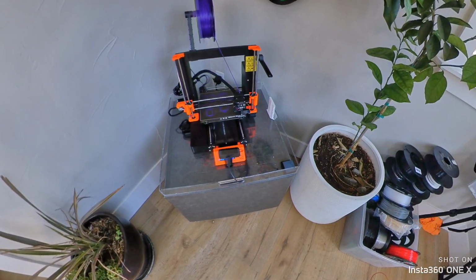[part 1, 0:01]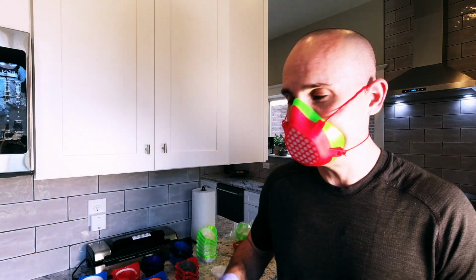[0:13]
Well, we're getting ready to pack up a bunch of these coronavirus masks, the COVID masks that we've been 3D printing over the last few days, and I wanted to answer some more questions that I've had from the community. A number of you have asked me a few things, and it's been amazing to see the outreach and the outpouring of help and support that's come from this. So many of you have been willing to pitch in and ready to just help and do whatever you can to get these made and get these out to the doctors and hospitals that need them the most.
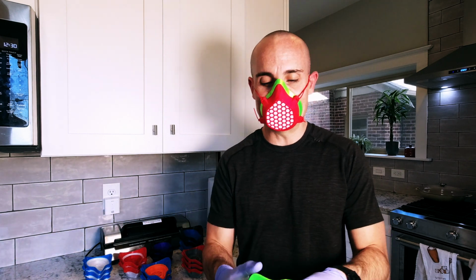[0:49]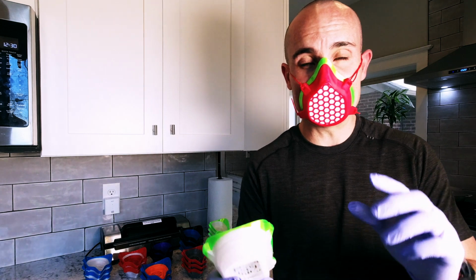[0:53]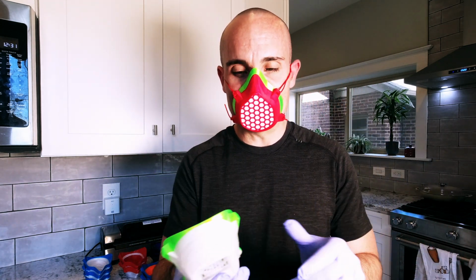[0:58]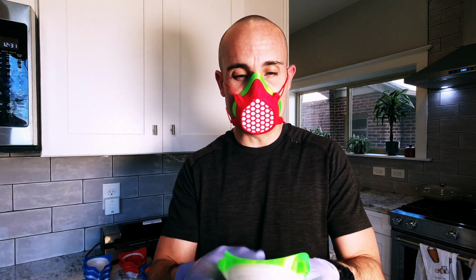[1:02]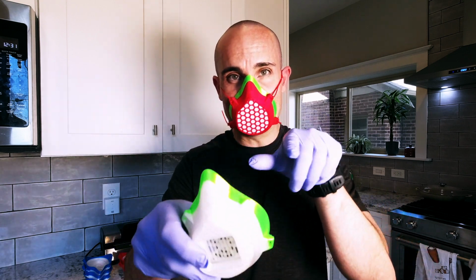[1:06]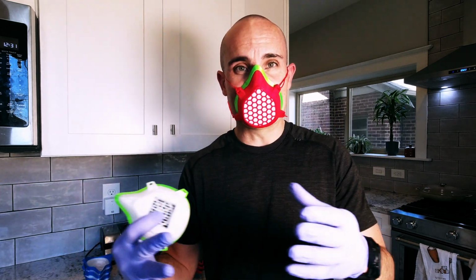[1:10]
Now, there's been a few common questions that have come up, and so I want to go over those. First, some more questions about the choice of materials have come up. One thing you want to note, you don't really want to use PLA for this. PLA has a lot of micro fissures. It's really brittle, and it's not really cut out for this job. PETG, on the other hand, is used to make water bottles, things like that. And so if you print it at a decent enough temperature and you have enough perimeters, I have 3 to 5 perimeters on all of my masks, you're not going to get as many of those micro fissures, and it's going to be a lot safer for the doctors.
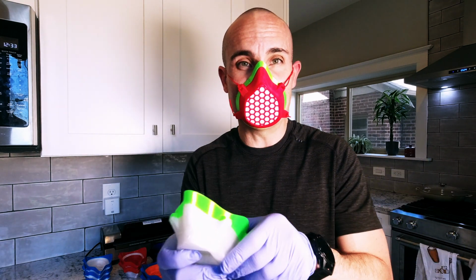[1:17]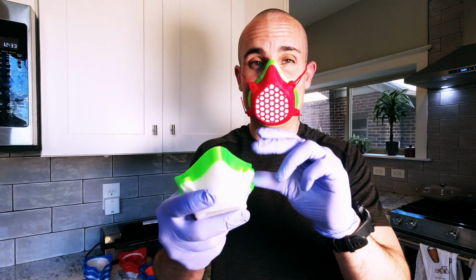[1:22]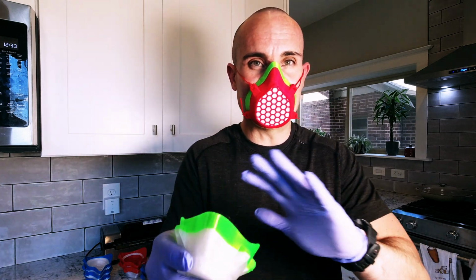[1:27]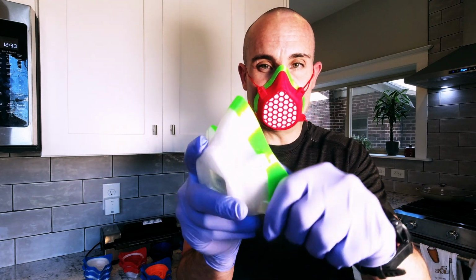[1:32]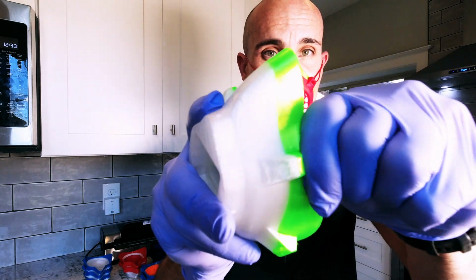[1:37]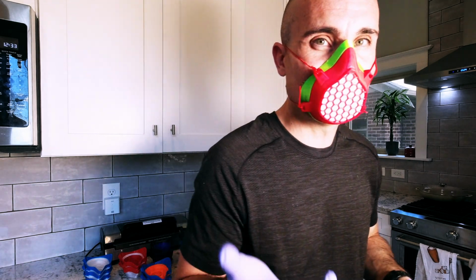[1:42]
Now, the other question that's come up a few times is how well PETG and TPU bond together. I should start by saying that PLA and TPU will not bond. You're not going to get adhesion, and so the layers are just going to come apart. That's not what you want. With PETG and TPU, however, because the temperatures are higher and the type of material they are, you can see this is one solid piece. This is not going to come unbonded. And the nice thing about this, and you can see this on my mask already, is that by having that PETG and TPU on here, the TPU really is what seals against your face.
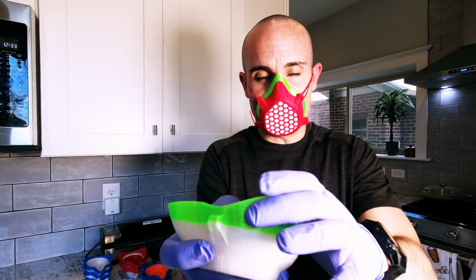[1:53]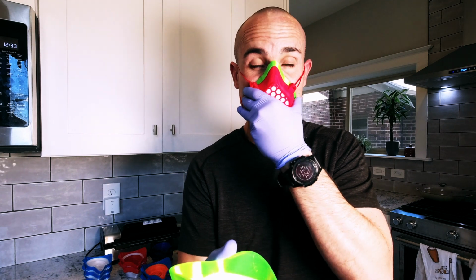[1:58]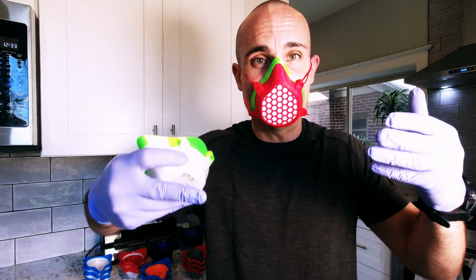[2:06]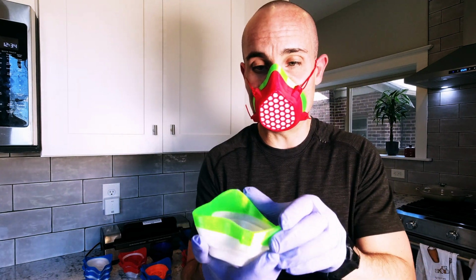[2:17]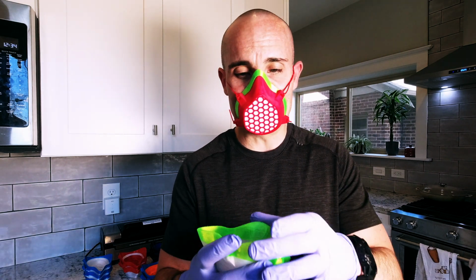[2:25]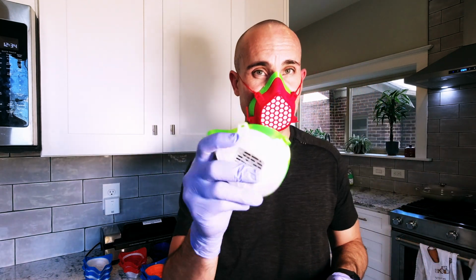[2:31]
If you aren't able to print with TPU, it's okay, but having that TPU layer on here just makes this more flexible. It makes it sit against your skin much better and gives you a better seal. Really what we want from these is that all of the air coming in and going out goes through the mask filter and not through the sides of the mask, because that's how you end up getting the virus and everything else through there. So really that seal across the face is the most important thing. The other thing is the comfort of this sitting against your skin for a long shift. Some of these doctors are working 8 to 12 hours a day, and so having something that's comfortable makes a big difference. So that's why we go with PETG and TPU.
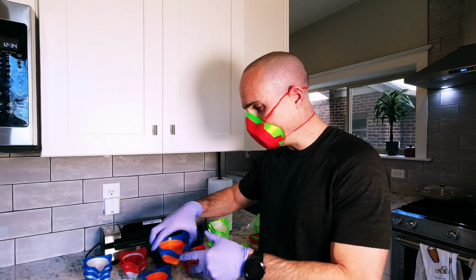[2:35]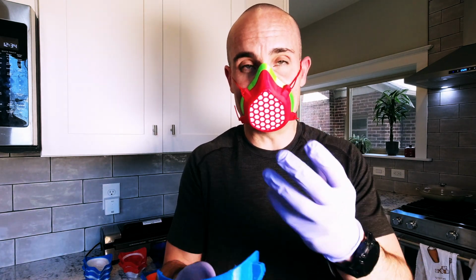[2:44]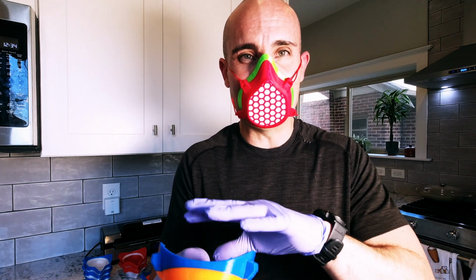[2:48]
Now, some people of course have asked, with the PETG and TPU, does the TPU actually create more micro fissures? And honestly, the answer is I don't know. But what we've done from testing is we found, since that seal is better against your face, it seems like this is still a better alternative to just having PETG alone.
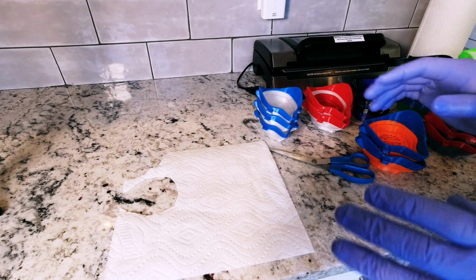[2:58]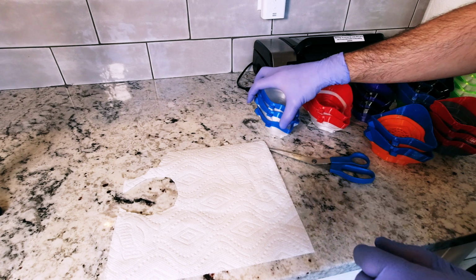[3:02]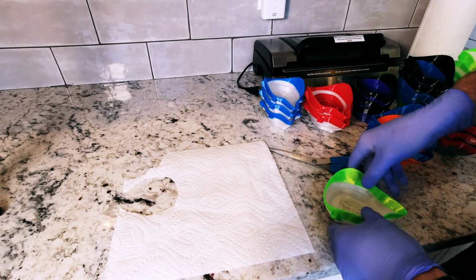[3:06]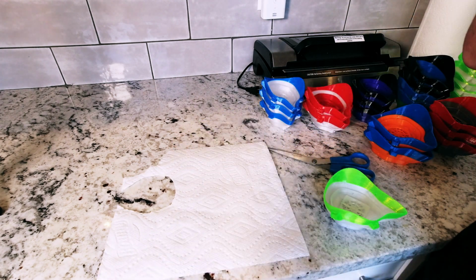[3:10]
All right, next big question is, how do you actually assemble these? What do you use for filters? Things like that. So let's dive into that. Obviously, this is for illustration purposes only, but I want to show you how you would assemble one of these. What you would typically do at a hospital is you would have an N95 mask. We'll pretend that this paper towel is an N95 mask.
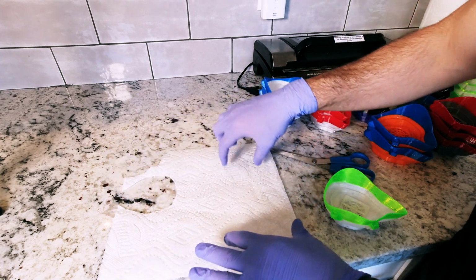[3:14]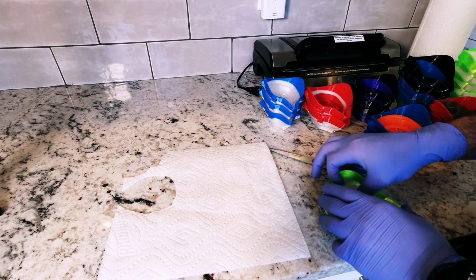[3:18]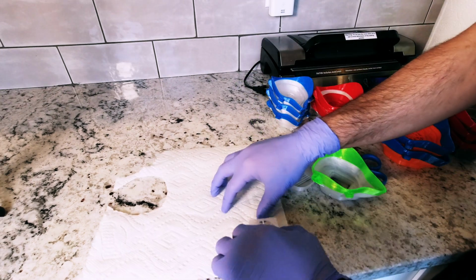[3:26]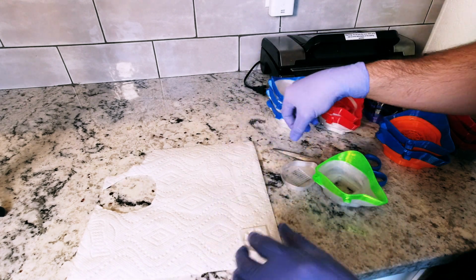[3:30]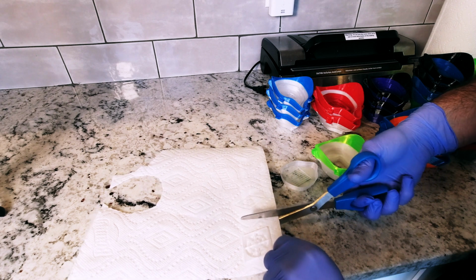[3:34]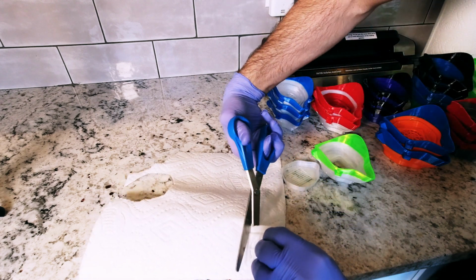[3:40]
And you would end up cutting 6 to 8 squares out of that N95 mask. The really cool thing about that is one N95 mask, instead of being single use, can be used for 6 to 8 of these reusable face masks. So what you would do is you'd take this square filter. The reason I like this design is because it uses these small square filters. And so what you'd end up doing is just cutting a square out. It doesn't need to be this big, obviously.
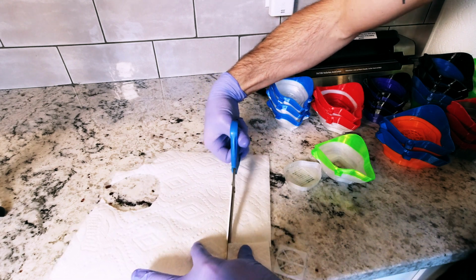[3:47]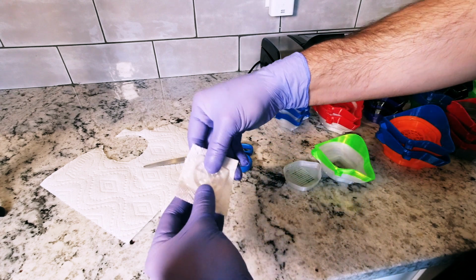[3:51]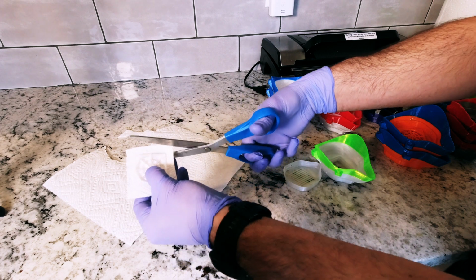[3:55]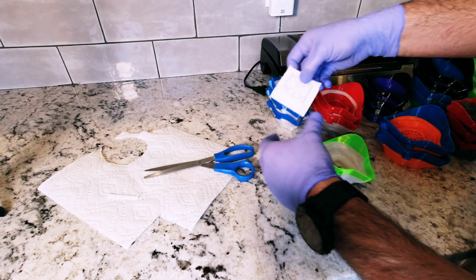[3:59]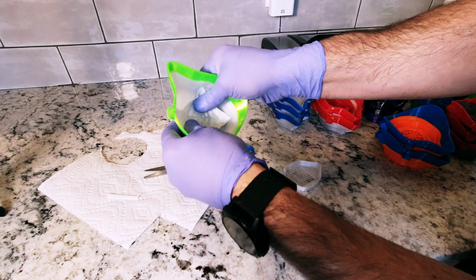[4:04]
And of course, I'm doing a terrible job right now. You'll get the idea. So you'll have that, it wraps around the edges, and obviously you don't need it that big. It just needs to overhang a little bit. And then what you do is from the inside, you pop this in.
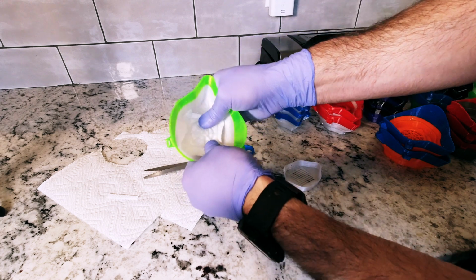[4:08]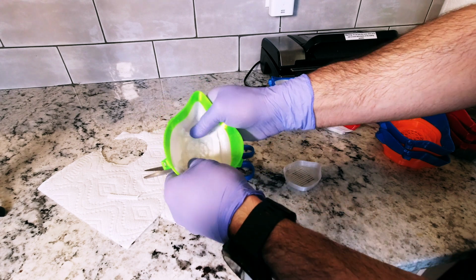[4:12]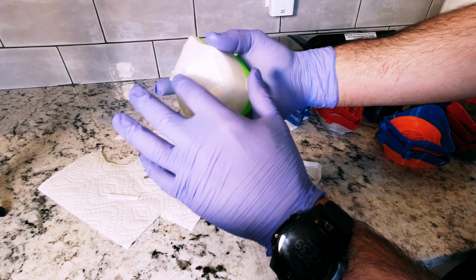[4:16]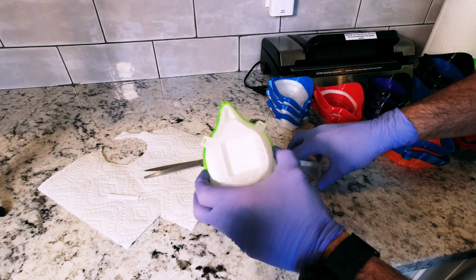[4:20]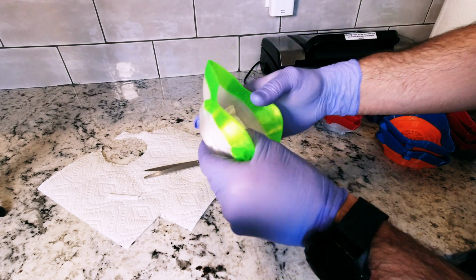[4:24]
And it's really tight, which is obviously what you want. And now when you look at it from this side, you see you have this nice tight seal of the mask and the filter, and then you place this over it just as an extra little bit of protection, and then this obviously goes on the face like that.
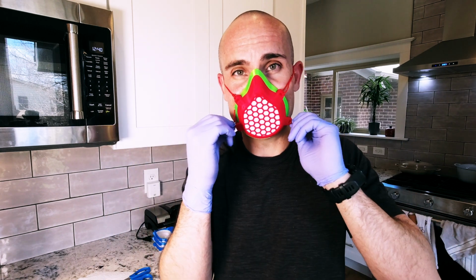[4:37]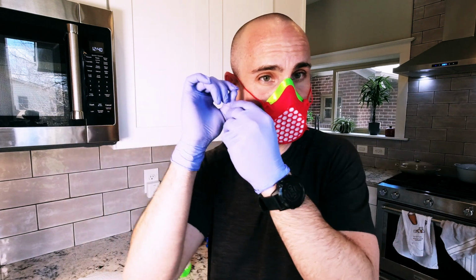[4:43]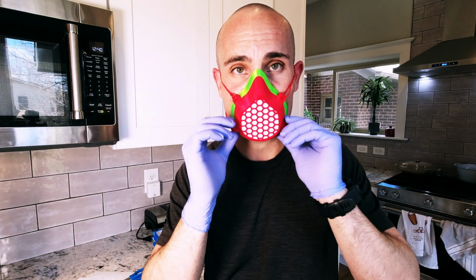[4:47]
Now, another common question I get is, what do you use for the straps? In this case, obviously elastic bands or something, rubber bands would be kind of ideal. I was going through the house trying to find things that would work, and what works really well is actually TPU. So you just cut a length of TPU, and of course it's really flexible and nice, so you just tie it and tighten it up. And you can get it nice and tight and get a good seal.
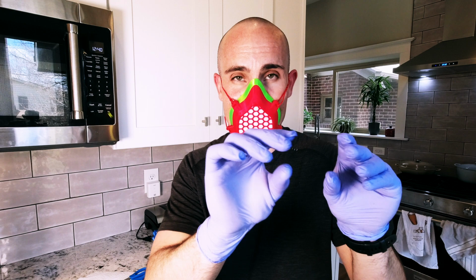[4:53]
Elastic, again, would probably be the best bet. And not elastic that has material over it, like felt or anything. You want that bare rubber, because if it has felt or something, that's not going to be able to be sterilized by the doctors. And so you really want to get something that can be sterilized. In this case, TPU seems like a decent last ditch alternative to some of the other things I've seen. But again, rubber bands seem like they would work.
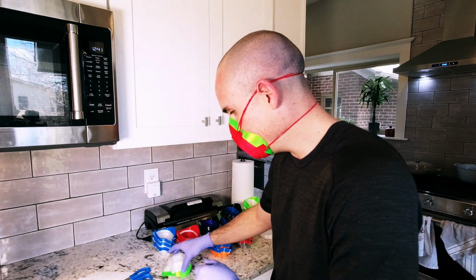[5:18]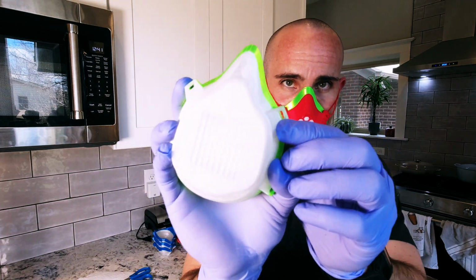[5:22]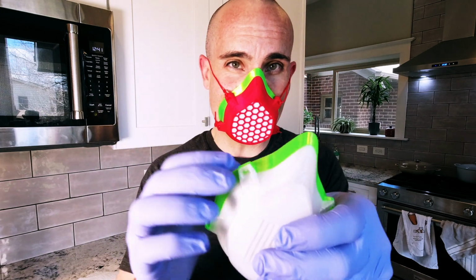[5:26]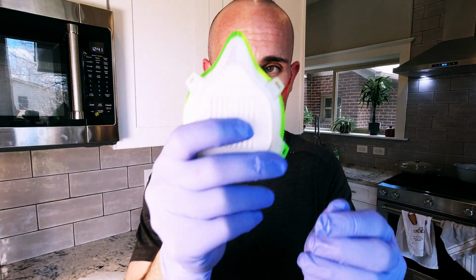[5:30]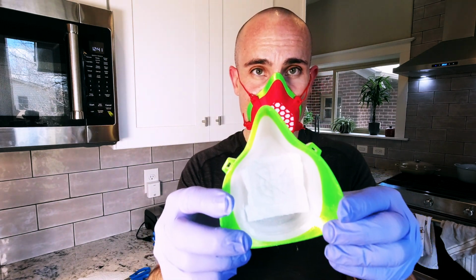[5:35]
And the nice thing about these masks is they have, it's probably a quarter inch or so hole opening on the sides, versus the Montana masks have a smaller round opening, which I don't think works as well. So these you can fit a little bit wider and larger bands in.
Now, as far as print times go, you're going to take about 8 hours to print three of these masks or two of the larger 100% scale masks. In the description, I've got links to my 3MF files. You should be able to import those into most slicing software programs and use that to generate G code. This is used on a Prusa Mark IIIs, and so if you have a Prusa Mark IIIs, it's kind of drag and drop, should be all set straight from the factory.
I'm using Zyltech PETG and Zyltech TPU because it's the only thing I could find. It looks like most of their stuff is sold out now, so if you have any good supplies of PETG that you can find online, definitely hit it down in the comments. I've heard that Prusa has discounted their orange PETG, and so that's a big help, especially if you're making the face shields rather than the masks.
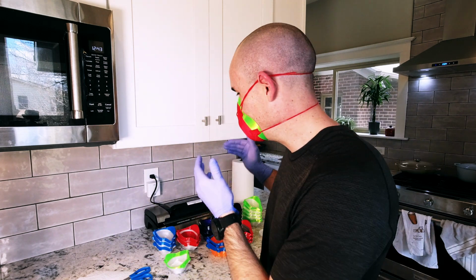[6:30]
Now, what I like to do is take the print straight from the printer, wearing my gloves and my mask, and get them vacuum sealed. If you don't have a vacuum sealer, because obviously not everybody does, then just get them straight into a plastic Ziploc bag or something like that, where they won't get contaminated by outside air, and get them into a box or something like that. And then coordinate with a local hospital or Masks for Docs, somebody like that, to try and get a pickup going or get these delivered.
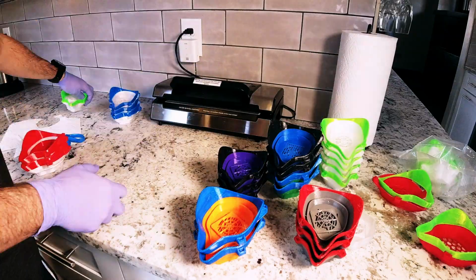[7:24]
But make sure whatever you're doing, if you're printing masks or shields, that you check with the hospitals and doctors first to see what they need. The last thing you want to do is start printing stuff that can't be used by people. Obviously, you can use it for home use, and that's great because in the United States, we're suggesting that people, when they go outside, wear a mask. So this is a great way to do that and not take an N95 mask from somebody who needs it more than us on the front lines, a hospital worker, a nurse, doctor. So let's get these vacuum sealed, packed, and ready to go.
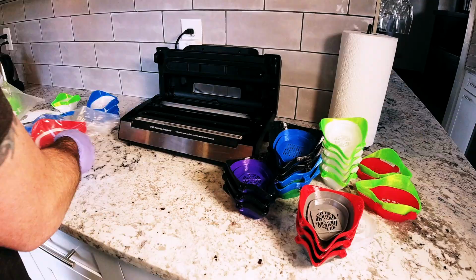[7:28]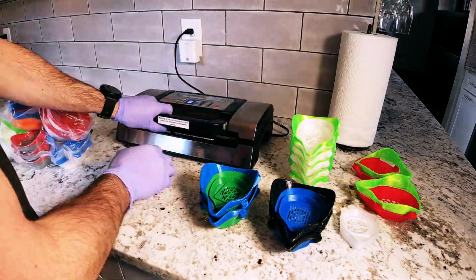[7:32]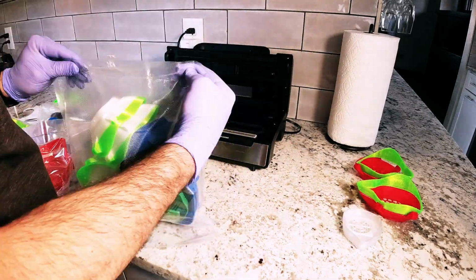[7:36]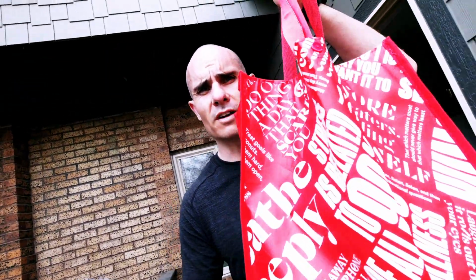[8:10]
I can tell you too, just having this mask on for the past 15 or 20 minutes or so, it's hot. And this is one that has a lot of breathing area, a lot of surface area. So it really gives you a glimpse, an insight into what our doctors and nurses on the front lines are going through and how hard their days really are. Wearing these all day must be pretty awful. And so, the best thing we can do is try and make them as comfortable as possible, thus the TPU around the outside. All right, let's get these things delivered. Got 25 masks.
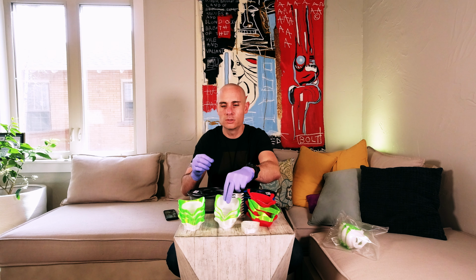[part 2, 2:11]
Today I wanted to talk a little bit about some questions I've been getting on Twitter related to how I'm printing these coronavirus masks for doctors and hospitals. Now first, I apologize if you can hear my 3D printer printing in the background. Normally I would shut that off during a video, but in this case, I don't want to take any time to shut it off when it could be printing masks that'll help somebody out in the hospitals.
So let's jump right into it. First, let's start with materials and what I've been using. Originally, when I started printing these, I was printing the masks in 100% PETG. PETG is a material that is used a lot in, like, water bottles, for example. I was printing them out of PETG, but the problem is that PETG, while it's flexible and durable and all of the things you would hope it to be, it's still really rough on the skin.
If you have a PETG mask sitting on your skin for 8 hours or 12 hours a day, you're going to run into problems. It's going to be chafing and cutting and scratching you. The feedback I got from that was that it wasn't very comfortable to use for long periods of time during a shift. So obviously we want to help prevent that. We want to make this as comfortable and useful for our doctors as we can.
So I went to the next iteration, and what I did was I printed the first 70-80% of the mask out of PETG, and then I transitioned it to TPU. TPU, if you're not familiar with it, is a really flexible material. It's almost like rubber, so you can use it to make a gasket, and you can see how flexible it is here. What that does is it creates this nice, comfortable layer that sits across your skin.
The other cool thing about it is, since it's flexible, you're not going to get that chafing and scratching that you would have from having this on your skin for a full day. The first thing I wanted to do is have these anchors out of mostly PETG. That's why I have the layer height where it switches to TPU so high, because I wanted these to be as strong as possible. The downside is that this bottom part that goes across your chin or around your chin
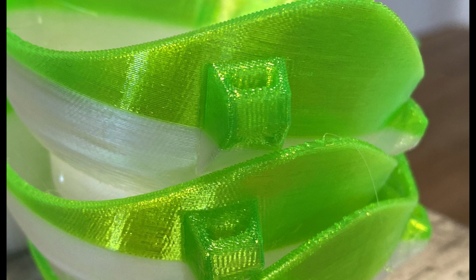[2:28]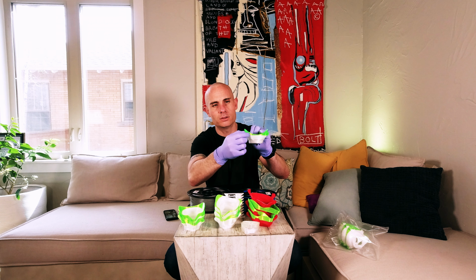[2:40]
is still PETG. So what we did is we did a test and we printed a mask 100% out of TPU just to test the strength of those mounting points where the straps go. We actually found that that was really comfortable and that those mounting points in the TPU are still really strong. So for the next iteration, you can tell I dropped the TPU layer down quite a bit. Now you get a nice TPU layer all the way around the mask, and it's thicker around where the cheeks and the nose go. Because of that, the entire bottom mount is now out of TPU, but it's still super strong, and I don't think that's actually going to cause any long-term durability issues.
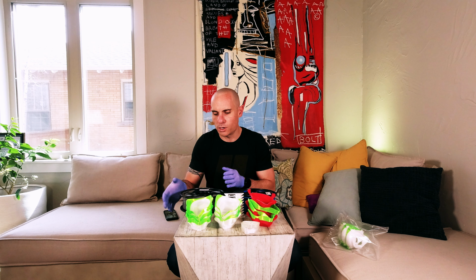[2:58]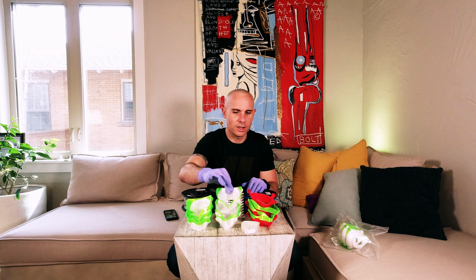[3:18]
So let's talk about the filament that I actually ended up going with that achieved this result. The first thing is I used PETG, which is what they use to make water bottles and a number of other things. That's what I use for the base layers in all of these. You could also probably use PLA and then use PETG along with that, but I ended up using PETG just because it's flexible and really durable. It also has a higher melting point, which could be good in the case where they're going to have to take these and sterilize them in between uses.
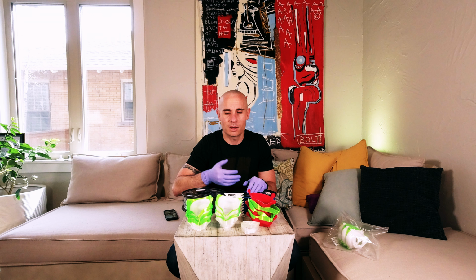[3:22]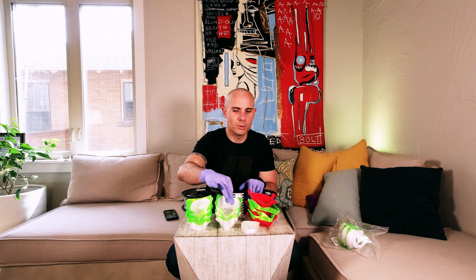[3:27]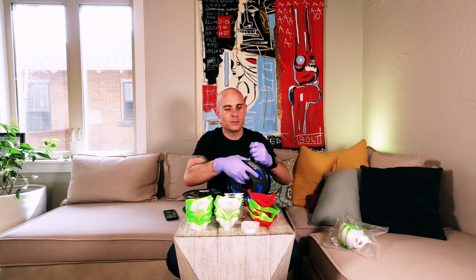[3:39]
They're probably going to be using chemicals and other things that might damage PLA, but we know from being in the field that PETG holds up to that. So PETG is what you're going to want to use for the base layers, and then TPU is the material you're going to want to use for the rest. And TPU, again, is really flexible. You can see how much this stretches. It's almost like a rubber band.
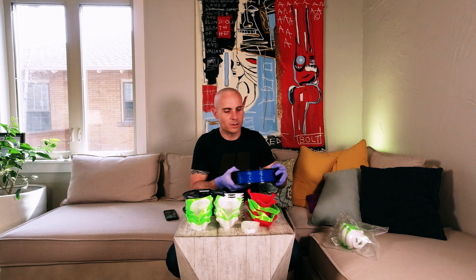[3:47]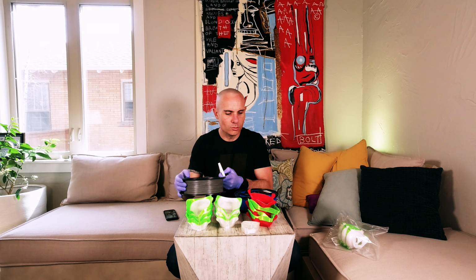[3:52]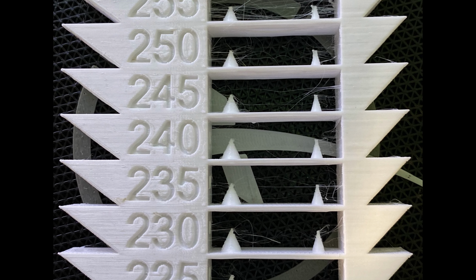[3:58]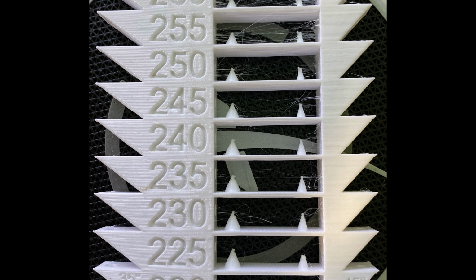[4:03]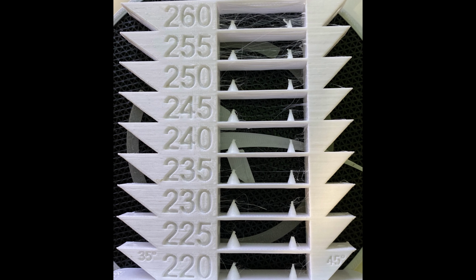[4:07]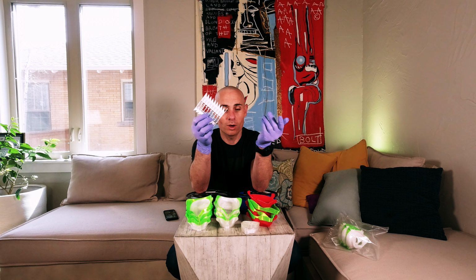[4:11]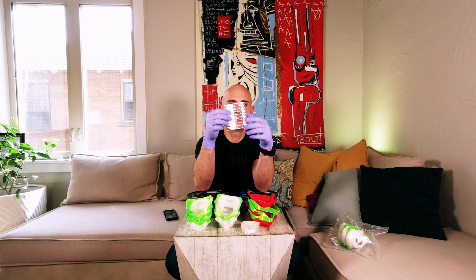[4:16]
And so some printers have a difficult time working with this, but I'll tell you what I did. Anytime you get a new roll of any type of filament from a new company, you want to print a temperature tower. You can see as the temperature goes up, the stringing in between the layers gets really bad. And if you look at it, you can see how the overhangs perform at different temperatures. You can see how the bridging performs at different temperatures. And what I found actually prints best and has the least stringing is about 220 to 225.
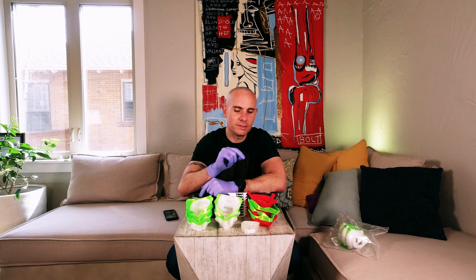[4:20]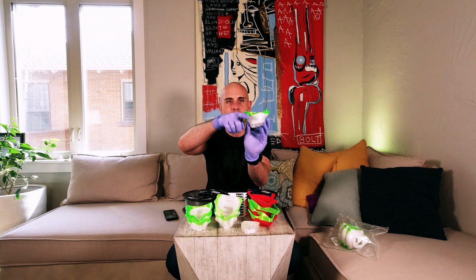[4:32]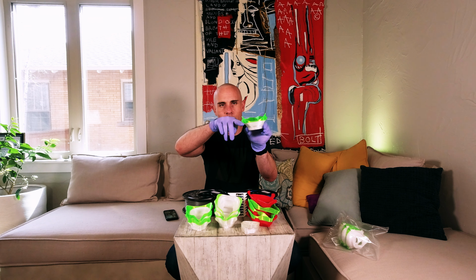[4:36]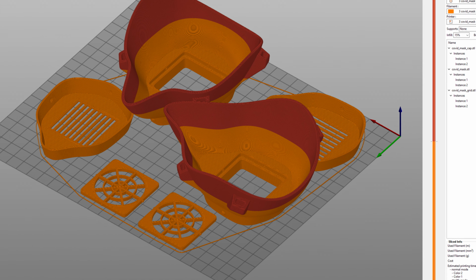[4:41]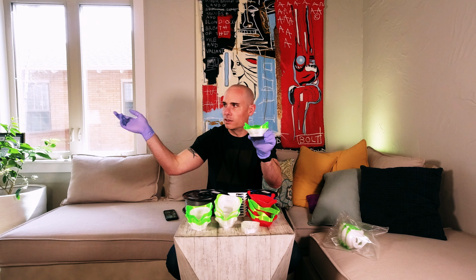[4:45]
The cool thing about that is I don't have a multi-material printer. I have a Prusa Mark IIIS with a single extruder. And even so, what I'm able to do in Slicer is set my layer height for the material change. All I do in Slicer is go down to the layers, right here, and set a color change. And what that does is, as this prints, when it gets to this layer, the material in the printer gets unloaded and it asks me to load a different filament.
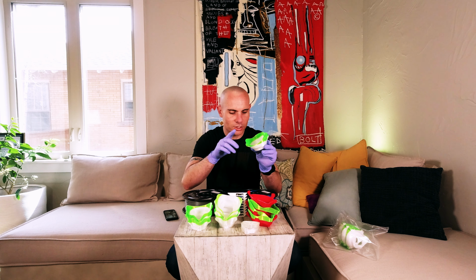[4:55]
The cool thing is that by printing the PETG at 225, that's the same temperature that I need to print my TPU at. And so I don't have to worry about changing any additional settings. They both print at the same temperature and the prints come out really good.
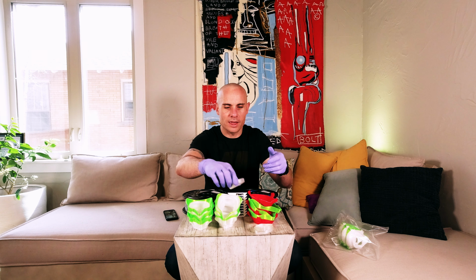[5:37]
Now, I have also printed multiple different designs for these masks. I of course have this style, which, if you take this, is actually 3 pieces. This piece pops inside of here. That's what you actually wrap the HEPA filter, or whatever filter material you're using, around. And then this piece snaps on the front like this. And between the two, sandwiched in between, is your filter layer. And this is nice. It's easy to take apart for a doctor. It's easy to clean, and that seems to work the best.
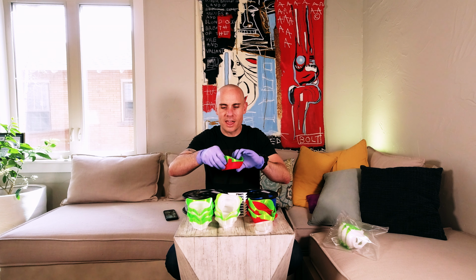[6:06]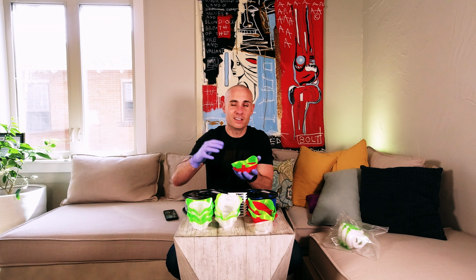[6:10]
The other design I tried was this one, where it's 2 pieces, and it prints the entire main structure, the part that holds the elastic that goes around your face. It prints that in the PETG, the primary material, and then separately you print this TPU. But the problem with that is you've still got to glue it on there. And so there are 2 things that are problematic with that. One, you're going to have to take the time to glue this. So you've got to have glue. That takes extra time. It's also a lot of hands-on involvement.
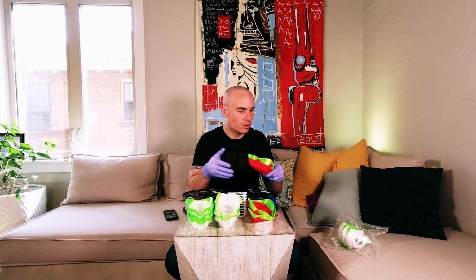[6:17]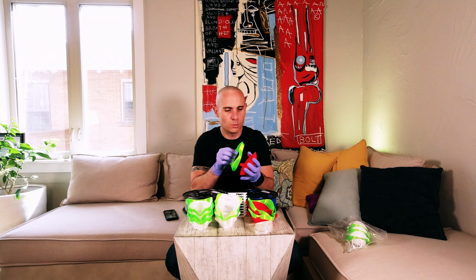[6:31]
These usually I just grab off the printer plate, and I get them right into a vacuum seal bag so that there's minimum time for them to get contaminated. But with these, you have to really get in there and handle them a lot. The other problem is whatever material you use to glue this. I actually used super glue, and well, I'll show you. Here's one that was super glued, and it still just comes right off. So I don't know what type of material would be best to bond these together, but it's not worth taking the time to do it.
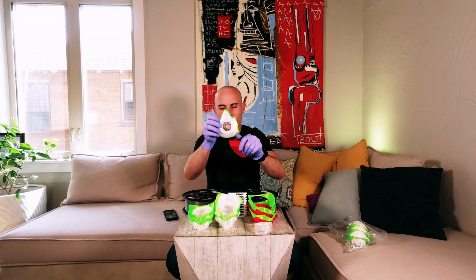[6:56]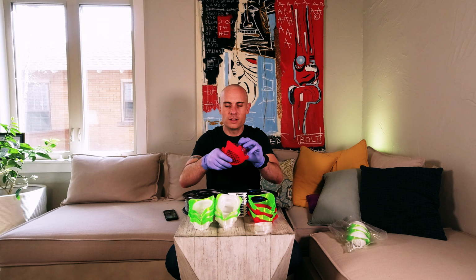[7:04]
The third problem I have with these is instead of having this just nice square piece, which, if you have what they're doing at the hospital, they're taking an N95 mask and just cutting squares out of them and placing that in here. And with this one, it's easier to breathe. It has 50% more surface area, which is nice, but it's also an odd shape.
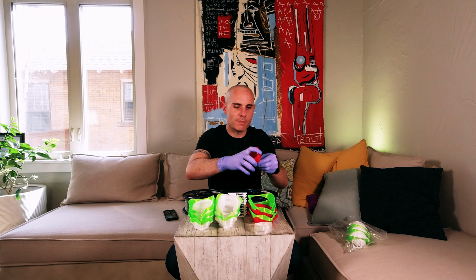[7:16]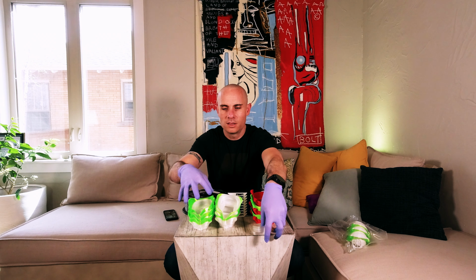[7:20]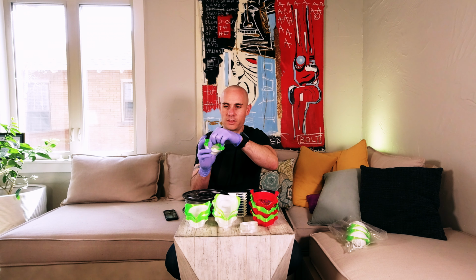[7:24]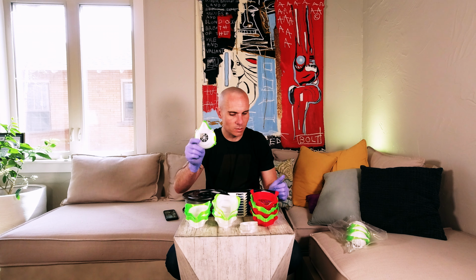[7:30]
And so the doctors would have to cut this odd shaped filter out, and they're not going to get as many masks per N95 mask made out of that as they would with this design. So this is the one we're finally going with. It has the full wraparound TPU, it's made out of PETG, and it has this square opening. That seems to be the winner from the doctors that have tested it.
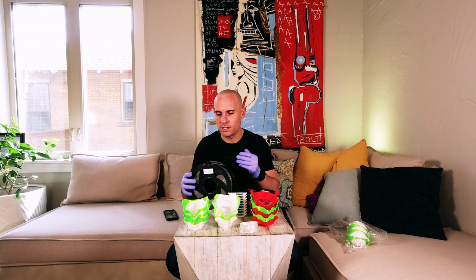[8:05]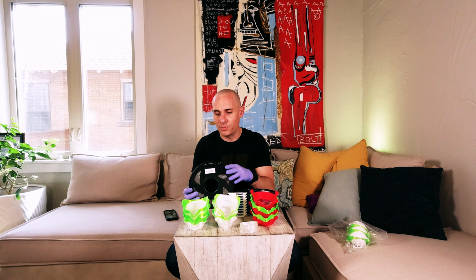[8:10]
So the other huge question: where can you actually get PETG, TPU, all that material right now at a decent price and shipped to you quickly? I went with Zyltech. No, they didn't pay me for this. They didn't give me discounts, nothing like that. I went online and I looked everywhere. I looked at Amazon first. Amazon has a bunch of shipping delays, and they're also out of most filaments because that's, I think, the first place people hit. I also looked at Matter Hackers and a couple others, and they're pretty much completely wiped out of PETG. Zyltech, I've never used them before, but they have tons of PETG, at least in stock as of a couple days ago, and their pricing was really good.
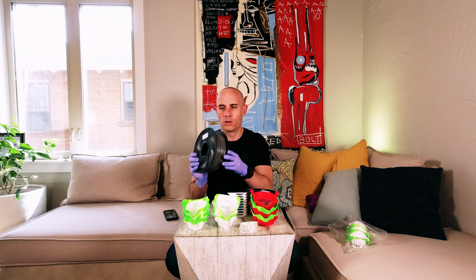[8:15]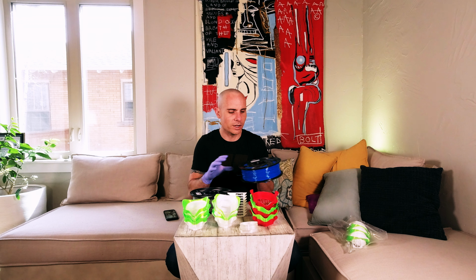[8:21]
I think a 2.2 pound roll, a 1 kilogram roll, was $22 for PETG, and it was $17 for TPU, which is the lowest TPU price I've ever seen. The other cool thing is I just used their regular ground shipping, their standard shipping. I didn't pay extra, and I was able to get these. I ordered them, I think, Sunday night, and I was able to get these by this morning, which is Wednesday, so just a couple days for shipping.
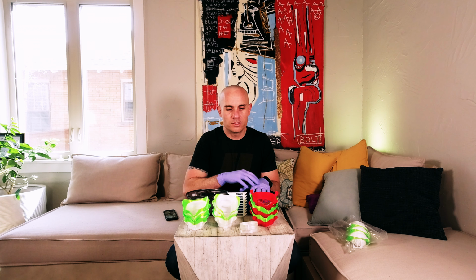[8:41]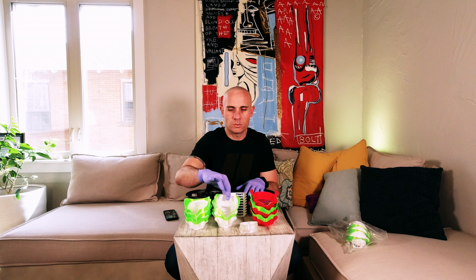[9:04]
Now, the last thing you want to do before you print any of these, before you undertake any of this, is head over to masksfordocs.com and see which hospitals are even accepting donations, which hospitals are in need, and also what designs they need. Some of them still just need the face shields. They don't want the masks. And some hospitals, like Northern Colorado, they're not accepting any 3D at-home printed parts at all. So check with your local hospitals.
Like I said, I've been working with a couple local doctors. They're using these, and just that one hospital thinks that they're going to need about 100 of these. So I got enough filament to print out 500, so we should be more than covered there, but check with your local hospitals and anyone you can before you print them, to make sure that they're going to be accepted and they're going to be useful. You don't want to take the time to print something that's not going to be used by an actual doctor and that's not going to help save some lives. So don't waste your time. Go to masksfordocs.com and you can figure out what's needed in your specific area.
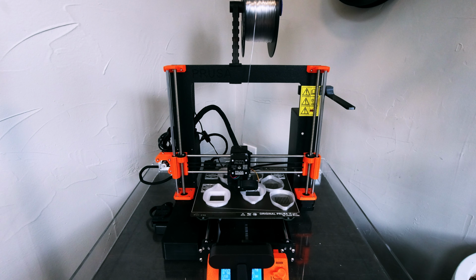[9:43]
I have been able to print 3 of these on each build plate. So I've got them oriented so that the 3 complete sets fit on each one. And that should be all you need. It prints in about 8.5 to 9 hours per 3 masks. So let me know if you can optimize that.
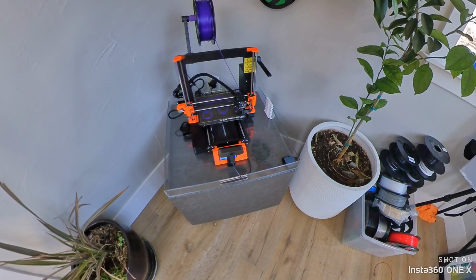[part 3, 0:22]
Today we're going to continue talking about coronavirus masks. After printing dozens of masks of different designs myself and getting those out to frontline workers in hospitals, doctors and nurses specifically, I've finally come to a conclusion about what I think is the best mask to print. So let's get into it.
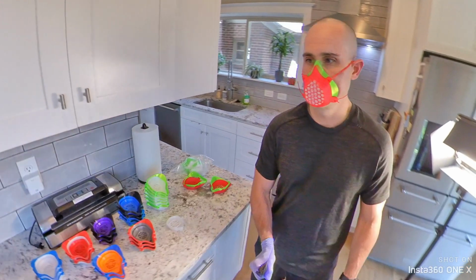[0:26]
A few weeks ago, we started printing coronavirus masks for hospitals here in Colorado because a lot of them were running out of PPE or personal protective equipment. These masks are kind of a last resort to help them stay healthy during this entire crazy crisis that's going on right now. So we started with a design that one of the doctors provided to us.
And what it was is this three-piece mask design where this front piece pops off. And then on the inside, you've got this square piece here that you cut a little bit of typically a HEPA filter or ideally polypropylene filter to place on this. It snaps in here, it's nice and secure, and these actually work pretty well.
The drawback to this, and it's a pretty big drawback, is that it's hard to breathe in these. Since it has such a small filter cross section in here, it's really difficult to get enough oxygen to breathe comfortably for an entire 8 hour, 10 hour, maybe even 12 hour shift that a lot of these doctors and nurses are experiencing today. We set out to do a couple things.
One, we wanted to make these masks more comfortable. Originally, we were printing these entirely out of PLA or PETG. But what I discovered is that by modifying the mask and setting a layer height change, you could print this top section out of a flexible TPU material. It still has all of the properties you would hope for as far as being chemical resistant.
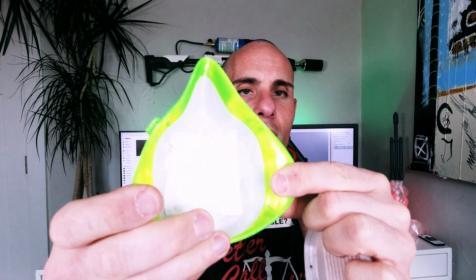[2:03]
It's a 95A TPU, which handles chemical resistance better than some of the other lesser grades of TPU. But as a side effect of that, it creates a better seal against the skin because now you can get it real tight, it flexes a little bit, and it creates a better seal, it's more comfortable, and you can wear it for longer periods of time. So this is kind of our go-to mask at the beginning, and I printed dozens of these and got them into the hospital workers' hands.
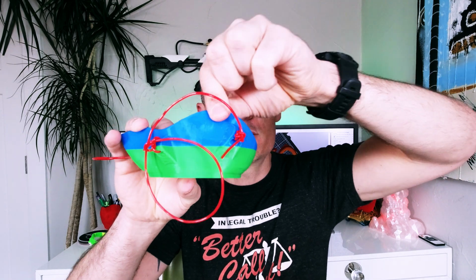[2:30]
And that brings us to this second design that we started using. Now, we did the same thing here. We did a layer height change, so you print PETG that's rigid on the bottom, and then you print flexible TPU so you get a good seal around the mouth, and it's more comfortable to wear. Now, the great thing about this one is it has a much larger surface area for that filter. You can see it's about 50% larger than the original design, so the breathability is better and it's more comfortable to wear for long periods of time.
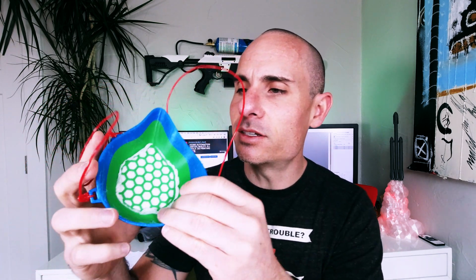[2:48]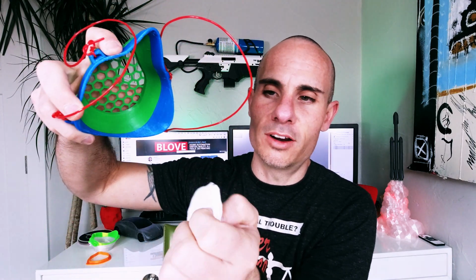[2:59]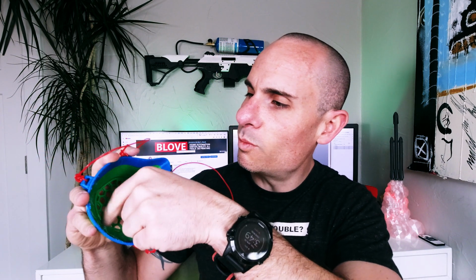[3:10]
The downside is the way that the filter snaps in on the back makes it really flimsy. So you can see here, watch. Okay, this is snapped in, and if I just, there, it fell out. So this inner piece is all that's holding that mask in. You can see the cross sectional area is very thin. It's only a couple millimeters in height, and that just barely pops in here, and it fits pretty loosely. That's not what we want. We want something that's going to be durable and hold up over a long shift in the hospital.
So let's look at the next mask design, which I'm considering the best one out there, the one that everybody should be printing right now based on what I've seen and printing probably close to 100 of these masks myself. So that leads us to this design, otherwise known as the bolivAIR mask. This design is fantastic. I love it.
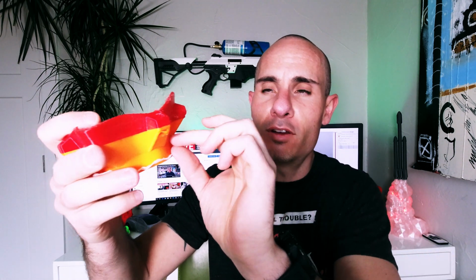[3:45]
So the first thing I did when I got this is, again, I set that layer shift change from PETG filament to TPU so you get that flexibility and that comfort of wearing this for long periods of time during a long shift. But this mask overall just has a number of design elements that make it ideal.
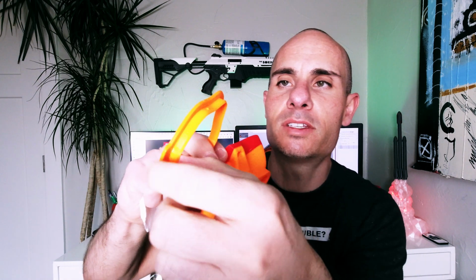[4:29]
First of all, I really like that it has this little tab on the side, so you can pop the filter out by pulling up on that. And the reason it needs that is because the filter really fits in here snugly. You can hear when I snap this in how tight that sits in there, and that's exactly what you want. It also snaps in from the front instead of the back, which I like for a number of reasons that we'll get to. But it also has these little indentions in here and these little tabs that stick out, and that helps snap it in.
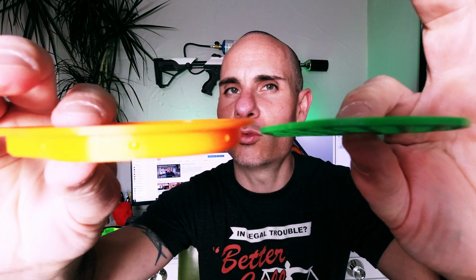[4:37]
You can see how thick this is by looking at the cross section here, and let's compare that to that other mask. You can really tell the difference. This one's gonna be much more secure in the way that it holds things together. It's just as easy to use. You simply cut out your filter, lay it over the top, and then snap it in here like so.
And an added benefit of this going on the outside instead of the inside, well, if you're cutting fiber masks to make this filter, or you're cutting any type of material that has rough edges or anything like that, now it's no longer on the inside of the mask. If you look at any of these other designs, say this original one, for example, see how this loose filter material is on the inside? Well, if this was something that had, you know, fiberglass or something else dangerous to your lungs, you're sitting there breathing that in all day.
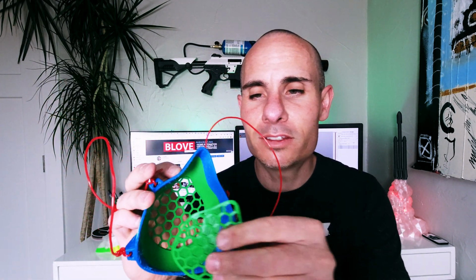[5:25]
The same thing goes for this design because it snaps in from the inside. So with this one, you've got the best of all worlds. You've got the large filter surface area of this mask. You've got this exterior connection, which has a very deep guide into it. And you've got, again, because we modified it, the flexibility of having the TPU on the outside for comfort over long periods of time.
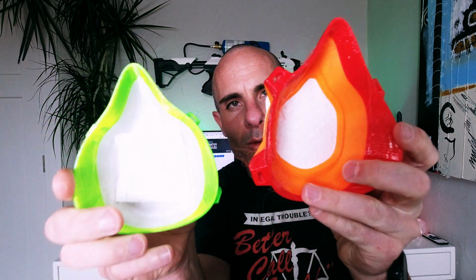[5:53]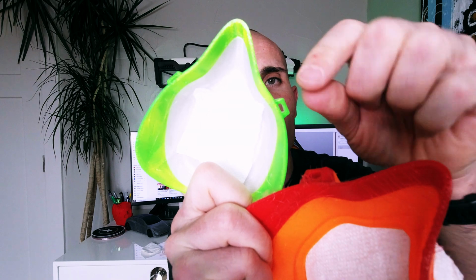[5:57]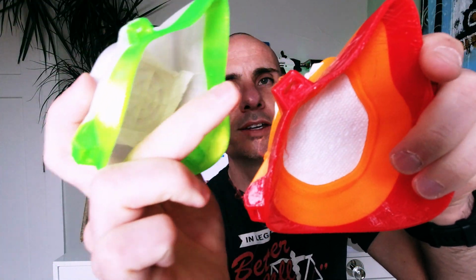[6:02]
And the final thing I like about this, if you compare it to the original design we had, you can see how much larger these strap areas are. So when you try to fish a strap through here versus this, it's almost twice the size. And so this makes it a lot easier to get different material straps in these, and it's less time that hospital workers have to spend fumbling around getting these tight around their faces. So it's a little bit easier to use overall.
So if you're involved in 3D printing already, or you're looking to get started because you want to help print masks for some of our doctors to help protect them against coronavirus, this is the design I 100% recommend at this point.
If you're unsure where to start or how you can help, go to masksfordocs.com. That's a great resource to find and connect with local hospitals and doctors in your area and find out what they need. A lot of people are printing face shields. Some are printing masks as well. Also, check out, again, the Slack channel, and you can find out if there's anybody in your local area that needs anything specific.
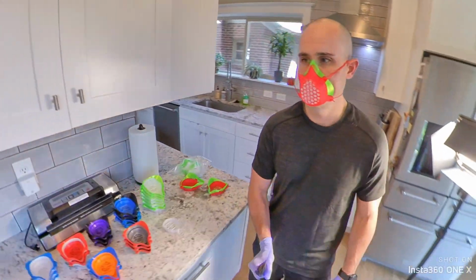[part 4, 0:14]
Today we're going to talk about mask straps for the Bolivar coronavirus mask. Let's get into it.
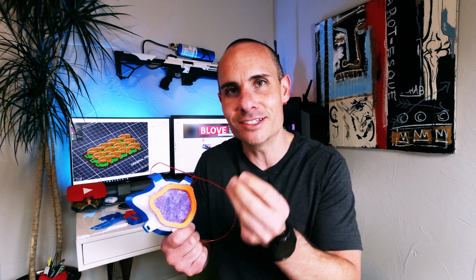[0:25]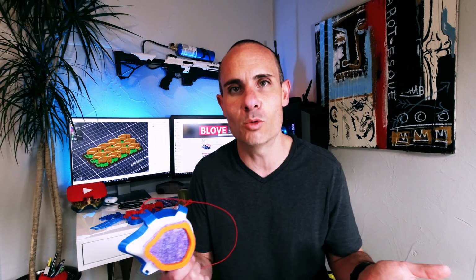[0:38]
Now, if you've been following along on my last few videos, you'll know that I've been talking about the Bolivar style mask design. And I was fortunate that those guys that actually designed the mask reached out to me. And we got to sit down virtually, of course, social distancing and everything. We had a Zoom call, and those are just fantastic human beings. I got to talk to them for a good while.
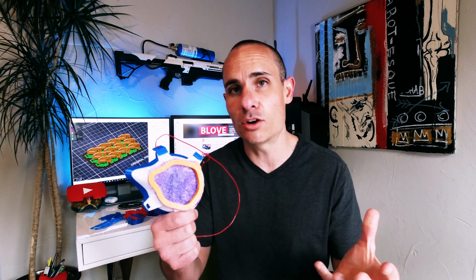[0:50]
And similar to a lot of us, they went through dozens of different mask designs, tweaking and iterating until they came up with the design for the Bolivar mask, which I think is the current best design for something that you can mass produce and get out in large quantities. That kind of checks all the boxes as far as what you want out of a mask. I did a video on that if you want to check that out below.
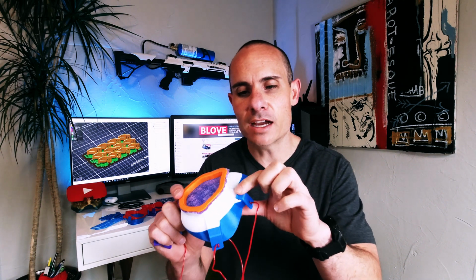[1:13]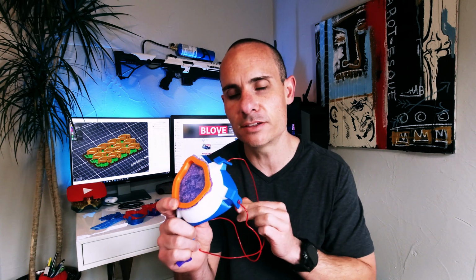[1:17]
Now, we started talking about other things like the filter media used, which I'm going to do a video on after this, so stay tuned for that. And another topic that came up was the actual clasps or the hooks, the way you actually strap these to your face. I had mentioned to them that I had trouble finding a suitable print that allows you to get the masks on and off quickly and easily. Of course, being the guys that they are, they actually had a solution for that. So that's what we're going to talk about today.
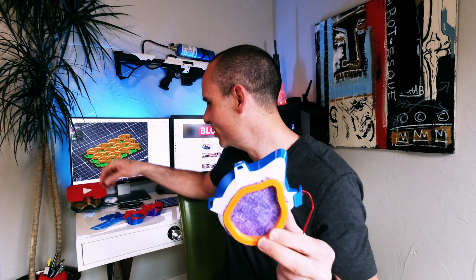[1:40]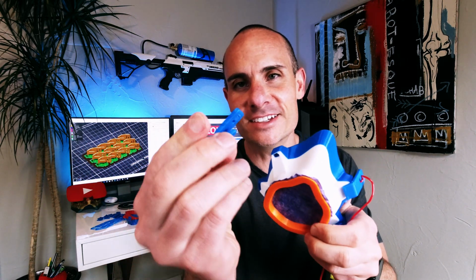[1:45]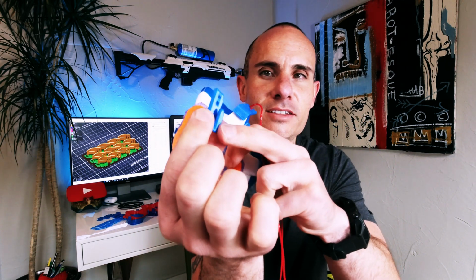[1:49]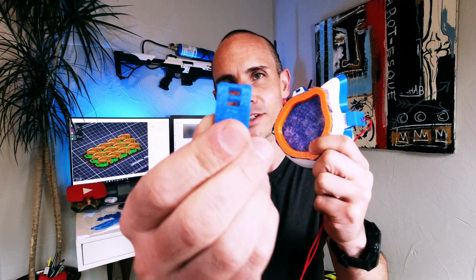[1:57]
One of the design elements that I really like about the Bolivar mask is these large openings for the straps. Now, they've taken it a step further though, which I think is incredible, and they've made these. One of the cool things about this is you see the way it's designed, it has this nub that sticks out, and then it has a place for you to put your straps. So you can take a nylon strap, for example, run it through here and then it's adjustable. You can tighten it and loosen it to fit your face.
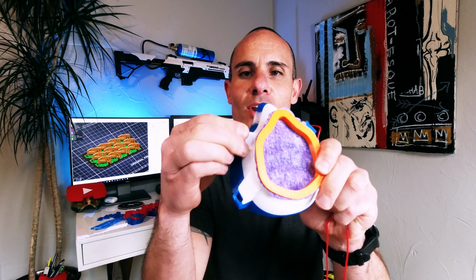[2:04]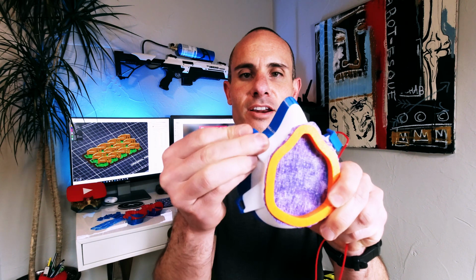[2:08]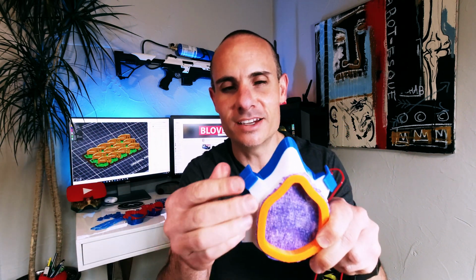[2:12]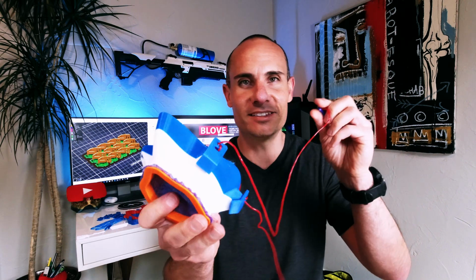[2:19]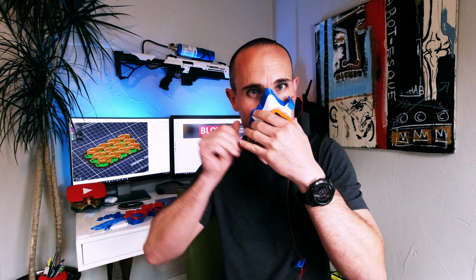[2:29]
The cool thing is this just slides right into those large openings they have here. You can take it on and off, as you can tell, nice and easily. So it's sort of a built-in quick release for the masks. Obviously, I don't have any stretchy material, any nylon, anything like that. So I've got my TPU straps, which are kind of jankety at best, but it's good enough for display purposes, right? So if you put this on, you can see that you can take one of these
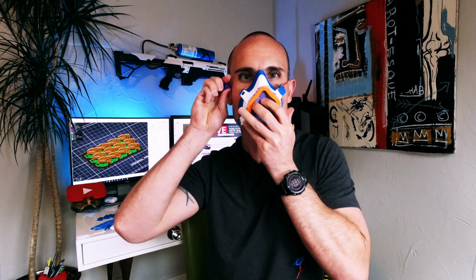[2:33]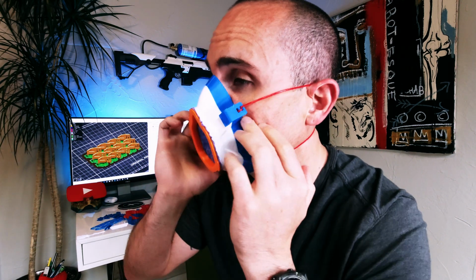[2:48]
and you simply pop it in. You can take the other one and again, pop that in. And now this mask is so firmly secured to my face. You can see it coming in here. And thankfully, because of the TPU, it's still comfortable, but man, this is super fast to get on and off. If I want to take it off, I just pop this off, and now I've got the mask out.
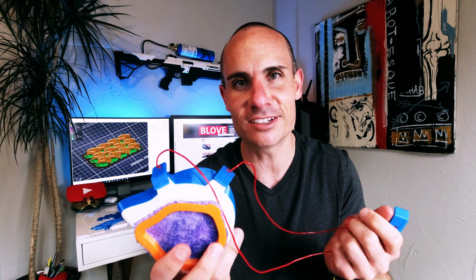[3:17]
And these are, of course, adjustable because, like any stretchy material, you can just pull these through and tighten them on the ends. So what a cool design. I really think this is clever, and those guys did a fantastic job with it.
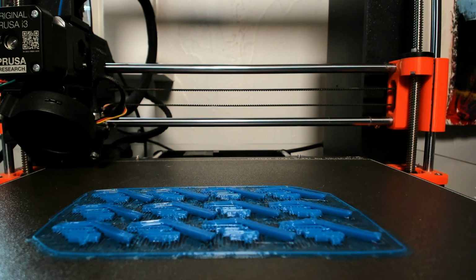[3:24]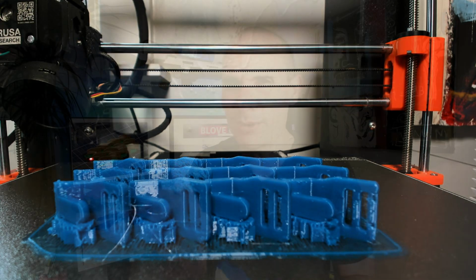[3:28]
So let's take a look at how those print in Octolapse, which I never get tired of. I mean, it's cool every time you see it, right? I should probably do a video on setting up Octolapse given that. Now, let's go ahead and do my favorite thing and snap those off the build plate. Come with me.
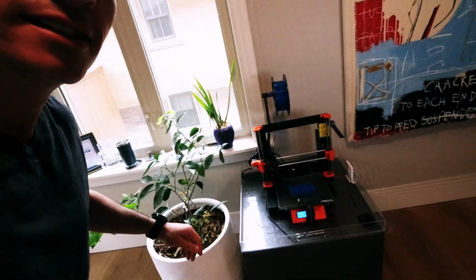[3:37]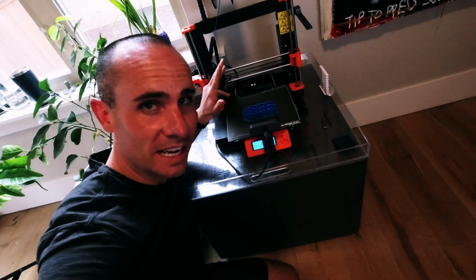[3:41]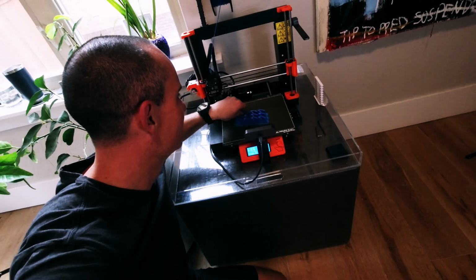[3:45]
This is by far the most satisfying part of 3D printing. Awesome, let's go take a look. Now, like everything else, I printed these out of PETG instead of PLA. I think PLA would just be too brittle for this use case.
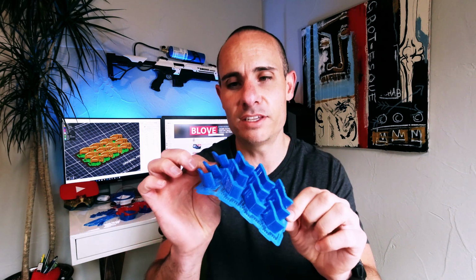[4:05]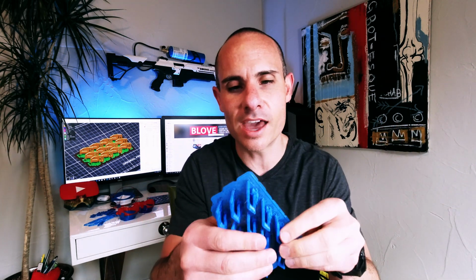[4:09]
I also experimented with a couple of different ways of aligning these on the build plate, and I think I've arrived at the ideal situation, and I'll show you the iterations I went through on that and why I arrived at this. Now, when I first started printing these, I printed them the way I think you would normally naturally orient them. I had this large bottom surface area down on the build plate. That makes sense, but there's two reasons why that kind of sucks.
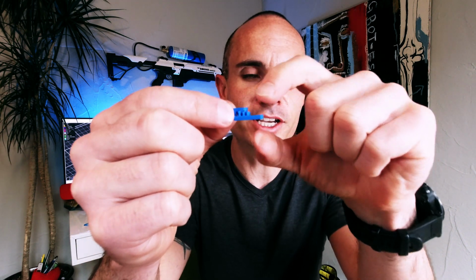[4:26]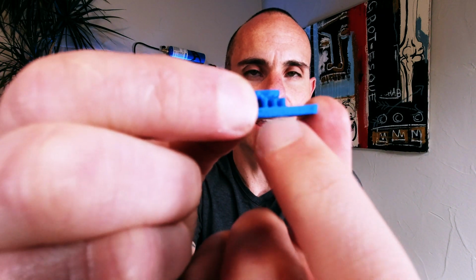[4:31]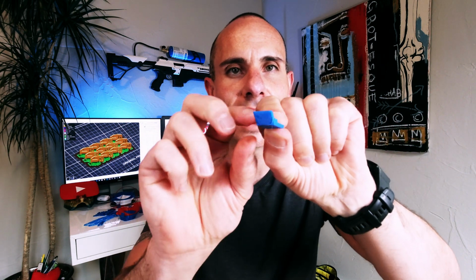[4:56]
Because of this big bridge here, you have to have a lot of support material in here, if you can see that. And if you've ever worked with PETG before, you know that getting that support material out is going to be a massive pain. Now, I made it a little bit easier by changing the width of the support material so that it has the minimum amount of filament touching both surfaces, so I can kind of slide a butter knife in there and just knock it out. But the other issue I had with this was I was actually breaking some of these even just getting the support material out.
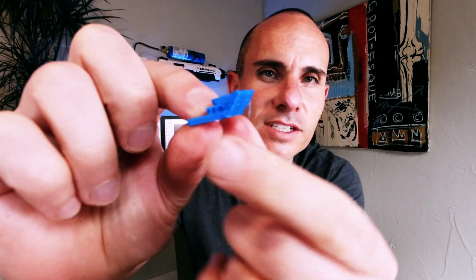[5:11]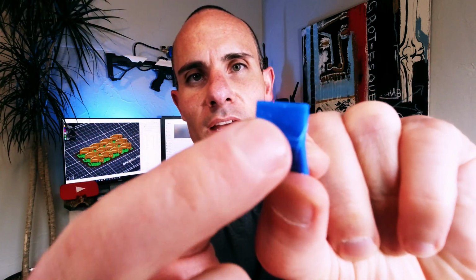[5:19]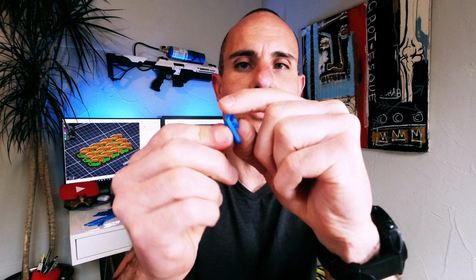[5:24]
And I think it's because of the orientation of this, and it makes sense. This is going to be the weakest way you could print this. Because if you look, the way an FDM printer prints, it's going to print each layer up, up, up. And so if you look at the way the layers are oriented, if you apply a lot of force to this piece when it's in the mask, this thing is going to naturally snap at those layer lines and snap like this. And that actually happened with a couple of those early attempts. Watch, you can see this. See how it just broke really easily there?
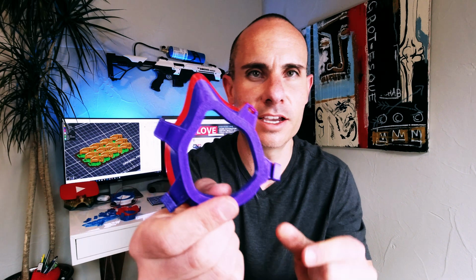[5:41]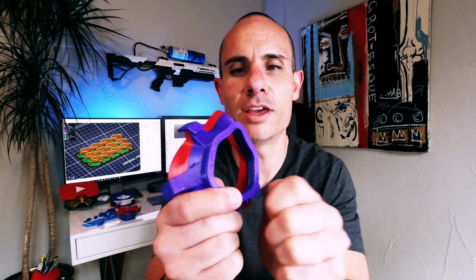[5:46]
And this is a child size mask, by the way. I printed these at 80%, and so this is smaller than you would normally print these at. But you can see, just like we thought, because of those layer lines, it snapped right where I thought it would. So how did we fix that?
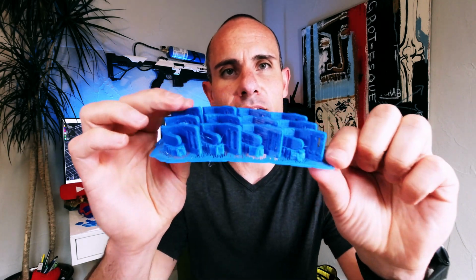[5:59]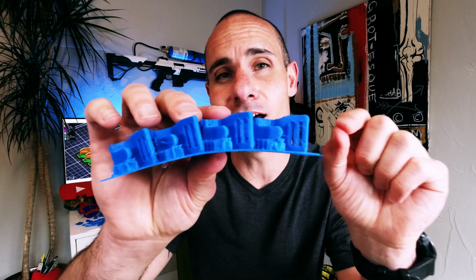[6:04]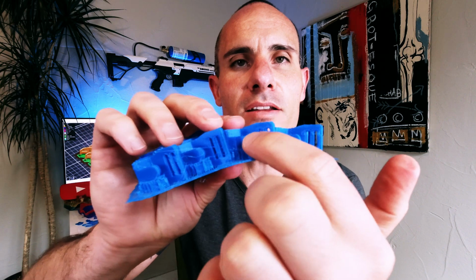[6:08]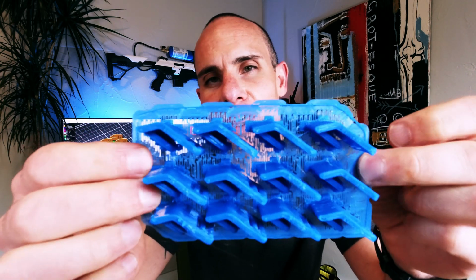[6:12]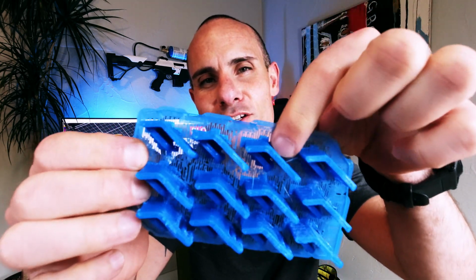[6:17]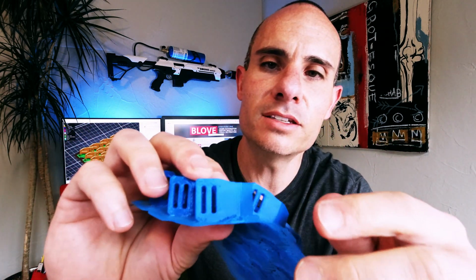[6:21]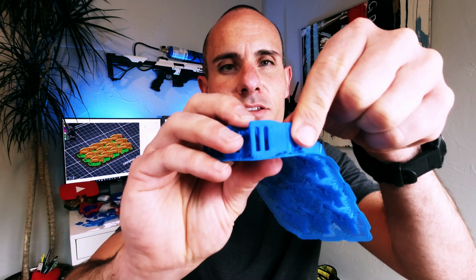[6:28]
We changed the way we oriented the parts on the build plate. What you can see here is that now we've got these oriented on the side. And so there's supports on the side that come up to that first bridge piece. Now I added a 5mm brim as well. That way when it's printing, it doesn't have a tendency to come off the build plate because there's such a small area that's actually touching the build plate. The cool thing about this too is that now those layer lines are going this way. So it seems like it's gonna be less likely to snap here.
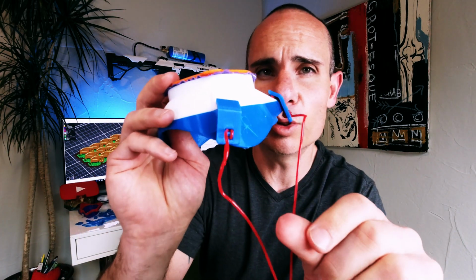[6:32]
And in fact, why don't we test that? You can see this is an example of one with the layer lines in the opposite orientation. And if we take that and we flex it, you can see how flexible that is. I mean, I'm torquing it pretty good and it's not budging. So this is gonna be a lot more durable. This is gonna stand up to day-to-day use much better.
And that brings me to kind of a point with 3D printing. When you're printing functional pieces, small details like the way that you orient the piece on the print bed or the way your layer lines are stacked up actually matters. As you saw with that other one, just applying a little bit of force here caused it to snap, but now these are much, much stronger. And so try to pay attention to a little bit of those details when you're printing something that's a functional part. And it can go a long way and make a big difference.
Now, as I always say, it's fine to use these masks for home use. If you are printing these for a hospital or for medical use, of course, take as many precautions as you can during the build process, and also check with the hospitals first to find out if they want face shields, face masks, and if they have a preference on the design that's being used. The last thing you want to do is print stuff that can't be used by medical professionals on the front lines.